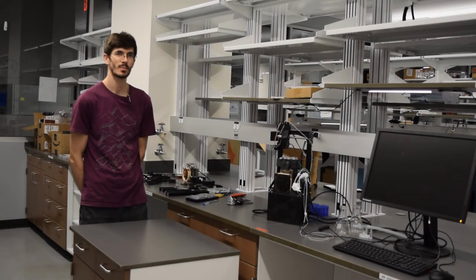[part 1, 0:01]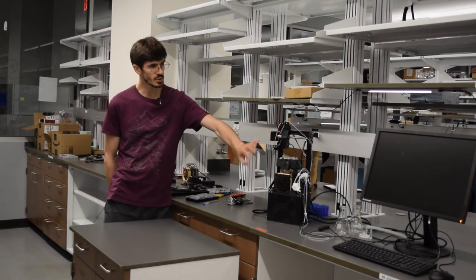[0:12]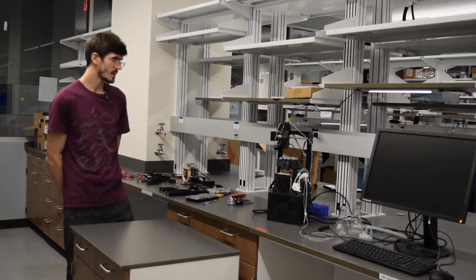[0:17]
I'm John with the Lynch Lab at Duke University, and in this segment we are going to be covering the first part of the assembly, the upper section, the Cartesian system, and the sample block here. So if you have not seen the first segment, the introduction and overview, I might recommend that you take a look at that before continuing. To get started here, we're going to look at the materials necessary to build it, and then we're going to put it together. I am excited. I hope you are excited.
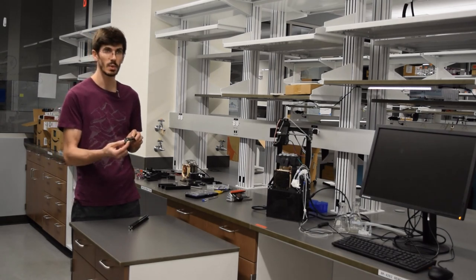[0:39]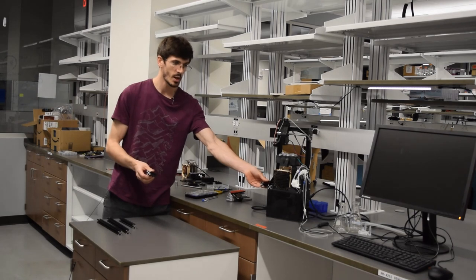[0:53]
So to start with the frame here, we have some 2020 aluminum extrusion. So that's 20 millimeter by 20 millimeter. It has the special V slot. And we have two pieces for the legs that are 290 millimeters. There's one piece for the X axis here that's 175 millimeters. And then two more for the feet down here that connect to the base that are 105 millimeters.
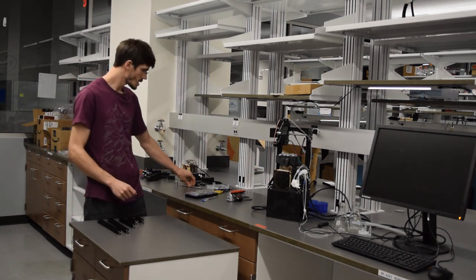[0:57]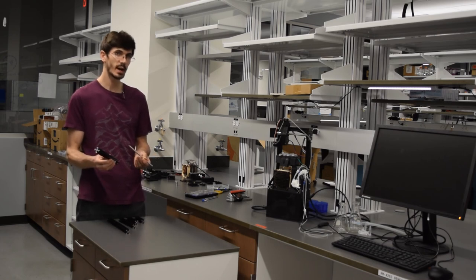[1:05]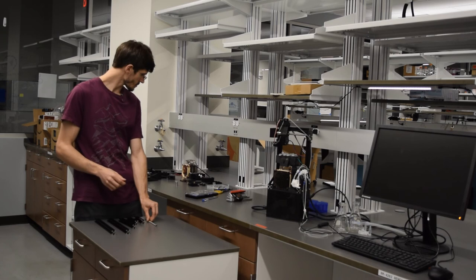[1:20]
Next, we have a lead screw that is 170 millimeters. So with the aluminum extrusion, you can cut this with a hacksaw and just shave off the sharp edges with a file. With the lead screw, it is stainless steel, so you are going to need a power saw with a metal cutting blade. This one was a little bit more difficult, so definitely be safe when you're doing that.
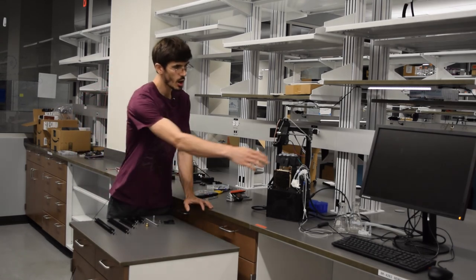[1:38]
To go along with that, we have a coupling nut to couple that lead screw to a stepper motor. There is a nut to connect the lead screw to the X gantry up here. We have the lead screw pillow and pillow bracket. So those are on this side over here that support one end of the lead screw away from the stepper motor.
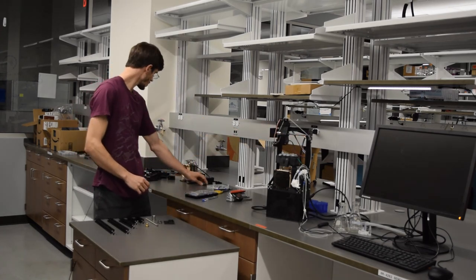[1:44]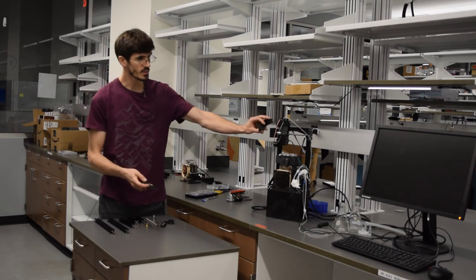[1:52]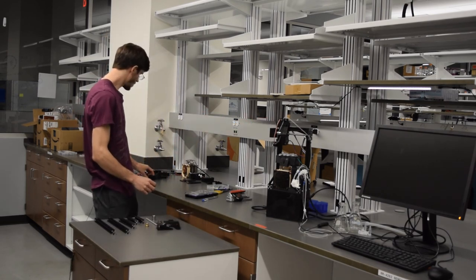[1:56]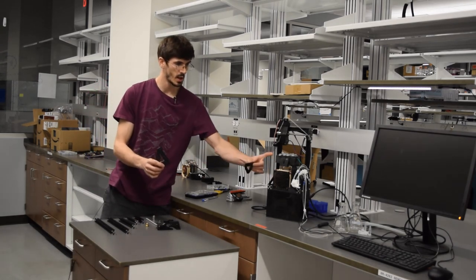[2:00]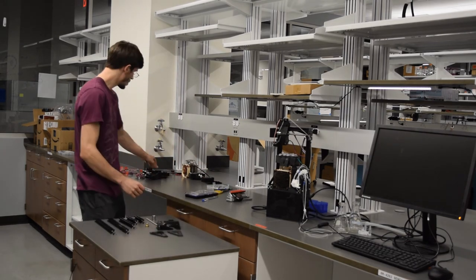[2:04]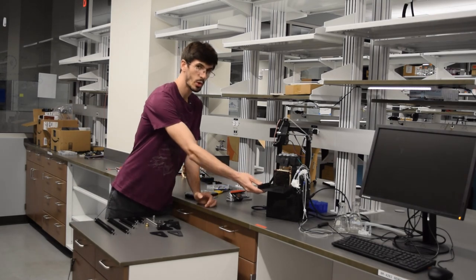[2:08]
Next, we have two wheels for the X gantry. We have the upper brackets up here. We have the lower brackets that are going to connect the legs to the base, to the feet. We have the radiator bracket here that's going to go at the base to hold the radiator and the base together.
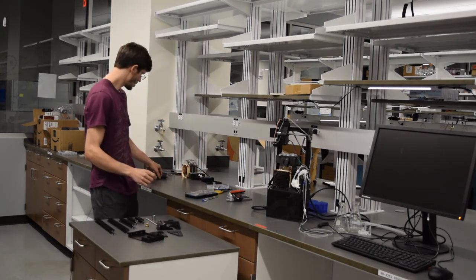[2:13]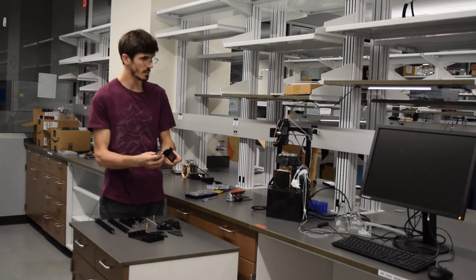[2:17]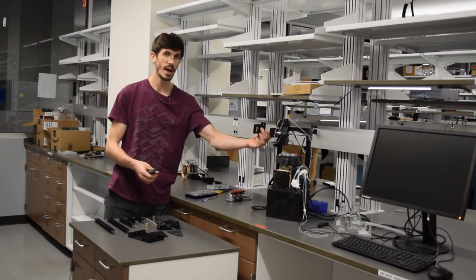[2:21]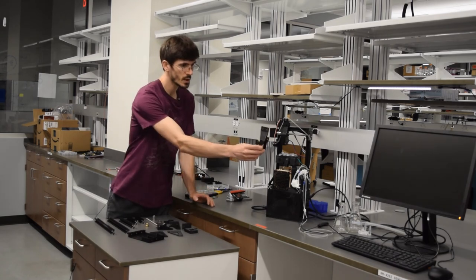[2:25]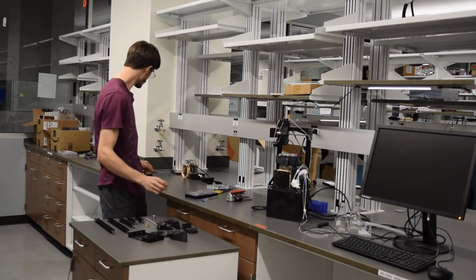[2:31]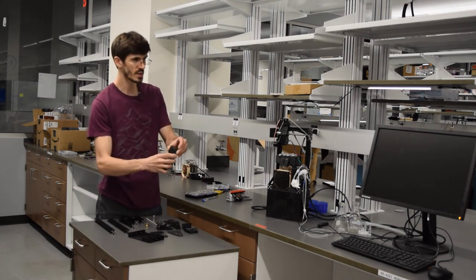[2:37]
We have two stepper motor brackets. So one stepper motor bracket is going to go on the side here for the X-axis stepper motor. And the second one is the X gantry that's going to move along the X-axis and hold the Y-axis stepper motor. The second part of the X gantry goes along with this. Those are going to mount together, and that is going to mount right to the X-axis.
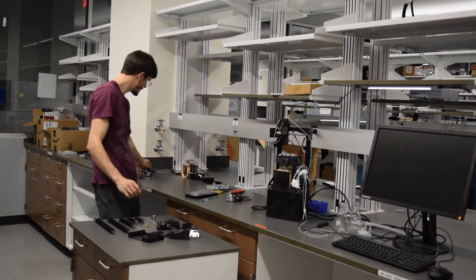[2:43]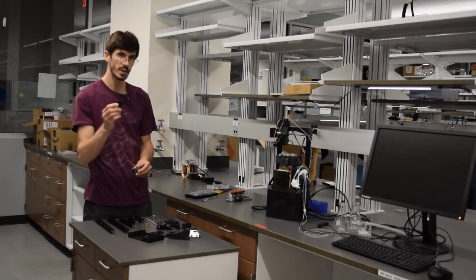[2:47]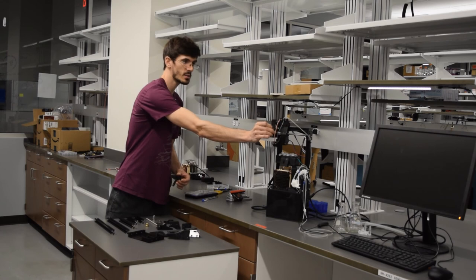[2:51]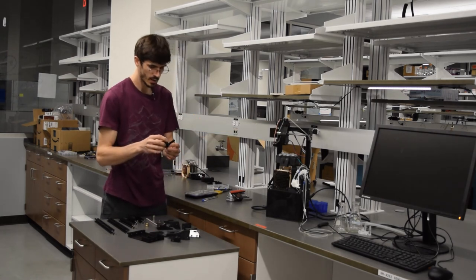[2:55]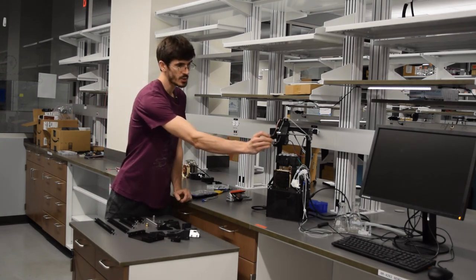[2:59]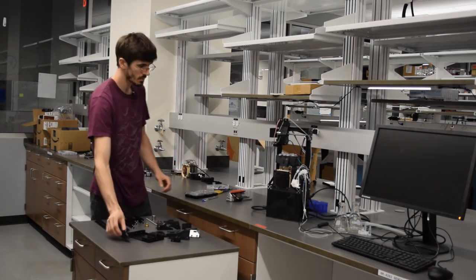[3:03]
Next, we have two switch brackets. So the X switch bracket will mount right on the left side here with the X end stop switch. And the Y end stop switch bracket will mount right to the X gantry here with another end stop switch for the needle.
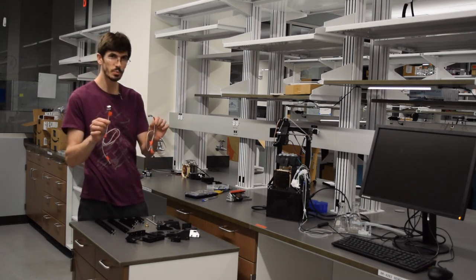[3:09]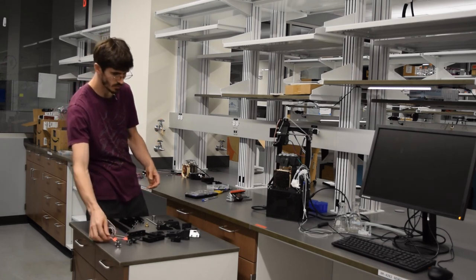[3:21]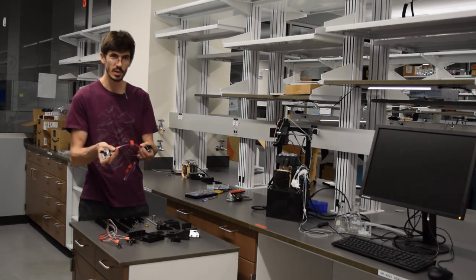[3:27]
For electronics, we've got two of the end stop switches. I've got the wires plugged right in, and I have labeled both sides of the wires Y switch and X switch to keep them separate. That'll help when we're assembling things later and plugging everything into the base. I've got two stepper motors here, also wires plugged in and labeled on both sides, Y step and X step. The Y step motor is going to have this needle holder attached to it that just plugs right on.
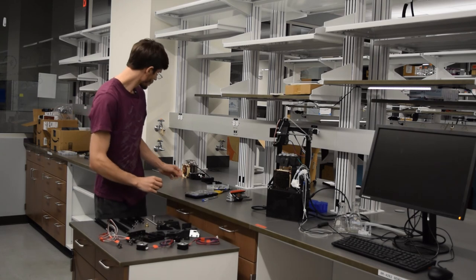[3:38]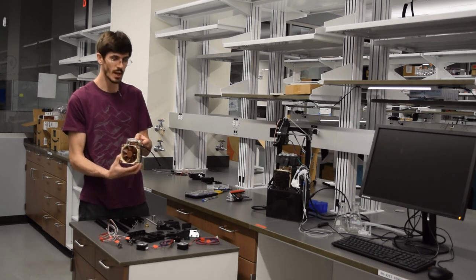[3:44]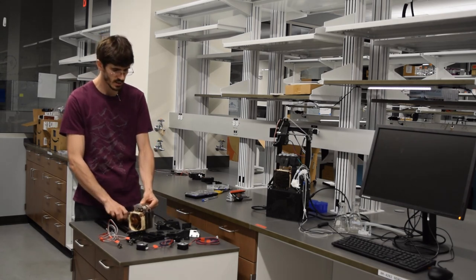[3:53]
Next, for the sample block, we have our Noctua U9S radiator. The fan and radiator come together. This is a 92 millimeter fan, and it's going to fit right in our radiator bracket there.
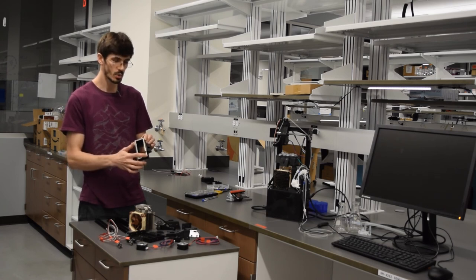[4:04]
The sample block box here is, when you 3D print it, going to be an open, hollow framed box, and I have already gone ahead and used some spray foam insulation to spray that right in there. Just a note on that, when you spray the spray foam in, you want to only fill the walls about 50% because it is going to expand. If you use too much, you could crack the inner wall. And it also is very sticky and makes a big mess. So just be safe with that.
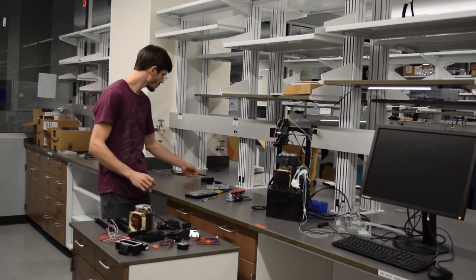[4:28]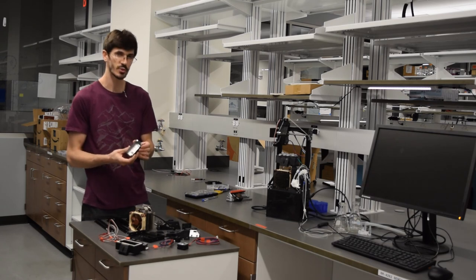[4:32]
Next, we have our aluminum box. So this is 38.5 millimeters by 92.5 millimeters, and it's going to fit right in the hollow-walled sample block box there.
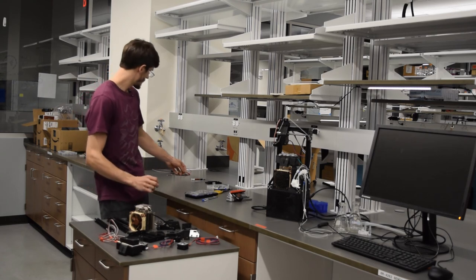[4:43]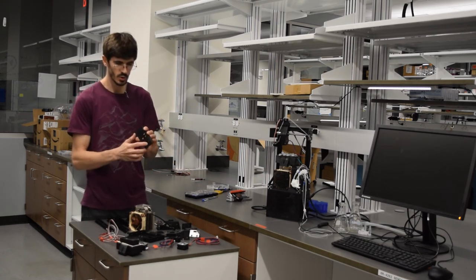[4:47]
We have the lid of our sample block. This has holes for 10 different tubes, and it's going to go right on top.
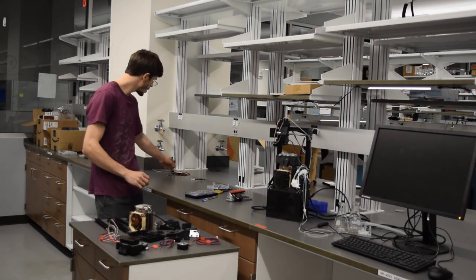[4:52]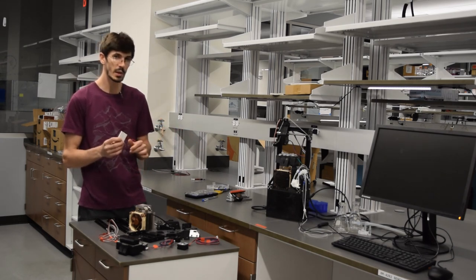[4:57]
We have the cooling unit, the Peltier. This is a thermoelectric cooler unit, and the basics of this: one side, the side with the lettering, is the cold side, and the other side's going to get hot. When you run a current through it, one side gets hot, one side gets cold, and the more we can keep that temperature differential close to zero, the more cooling we can get on the cold side. So we're going to put that right on top of the radiator and then try to suck the heat away from it, cool it, and that's going to keep the cold side cooling.
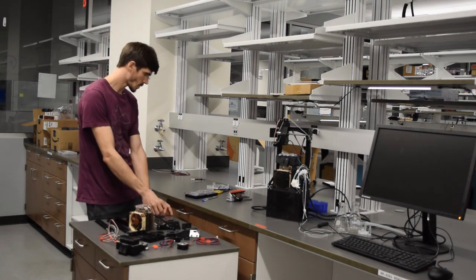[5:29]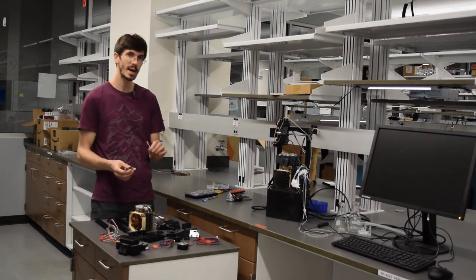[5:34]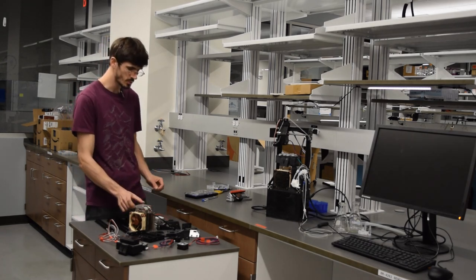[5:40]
To go along with that, we have some thermal paste and a spatula to spread that around on the Peltier and the radiator. That comes with the radiator, so you don't have to buy that separate. We've got a couple extra wires here that, once we put this together, we are going to extend the wires of our Peltier.
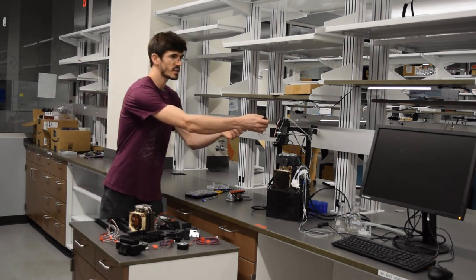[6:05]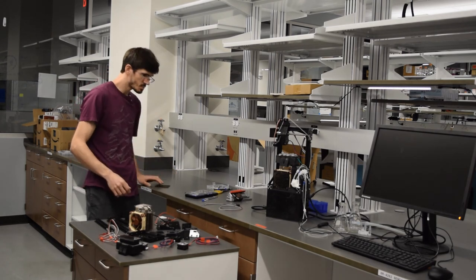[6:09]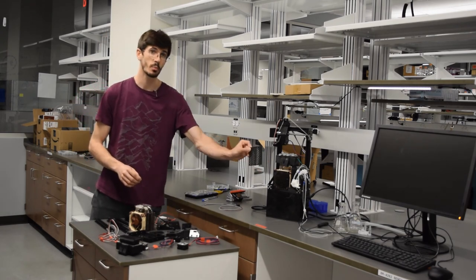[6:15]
We have a fluid sensor here, one of our two. This is an OPB350 fluid sensor. They're pretty cheap. That's going to go right up on the X gantry up here when we're all finished. And then last but not least, we have a fan cover that goes right in front just to keep you from putting your fingers in that fan.
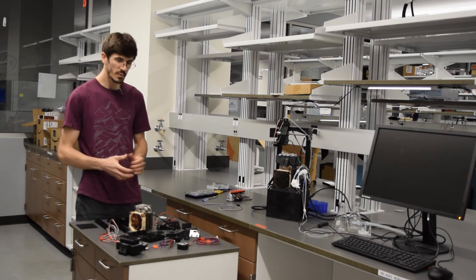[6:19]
All of these pieces are 3D printed. I have already removed the support material. If there's an overhanging edge, it prints a low density material underneath so that it has a surface to print on top of. You then do need to remove that material, and just a note on that, when you're removing it, be careful. There's sharp edges. You need to break it away, so be careful.
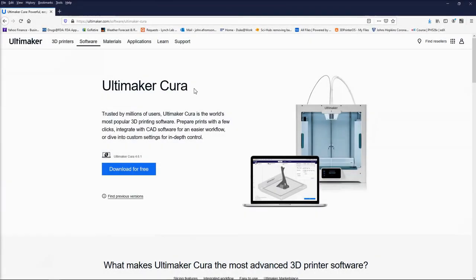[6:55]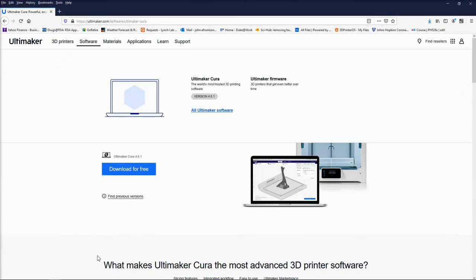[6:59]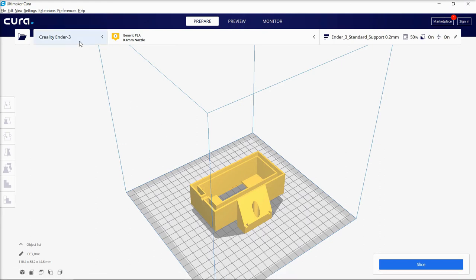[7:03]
Next, just a couple notes on 3D printing if you are new to that. We're going to be using Ultimaker Cura as a slicing software, and you can download that for free from ultimaker.com. Just Google that. Once you're in Cura, you're going to set it up with your printer. I use both a Creality Ender 3 Pro and an Ultimaker 3. The Ultimaker 3 is a little bit more expensive, but it is really nice with the soluble support. You can print much better detail if you have the money for that.
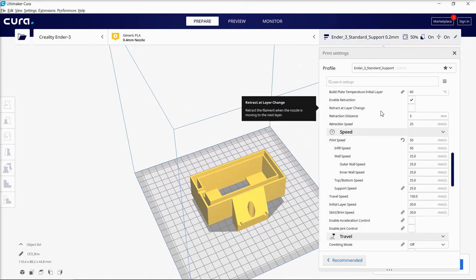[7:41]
It's about $3,500 to $4,000 plus materials. The Ender 3 goes for about $240 on Amazon. It's pretty cheap, maybe a little bit more, $240 to $280, but I've been getting some pretty good results with that. So once you have your STL file loaded, which I have provided, you're going to need your slice settings here. I just wanted to go through those quickly.
The big ones: I use a 0.2 millimeter layer height. Everything else should be set up pretty standard for you. The infill density is important. You can change that. 20% is base standard, so if it's just a test part, you can use 20% infill. I print most of my actual functional parts at 50%. It's strong enough. And if you want something really strong, use 100% infill density.
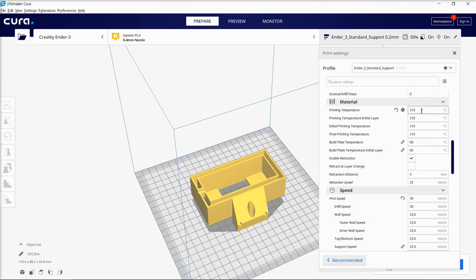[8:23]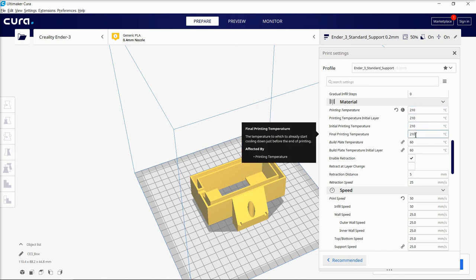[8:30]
Printing temperature is going to be specific to your material. PLA prints between 200 and 230. A couple of them, I do use 200. With the one I'm using currently, I slice at 210, and that makes it print a little bit better and adhere to the bed a little bit better. For the build plate temperature, I generally use 60, which makes it stick really well.
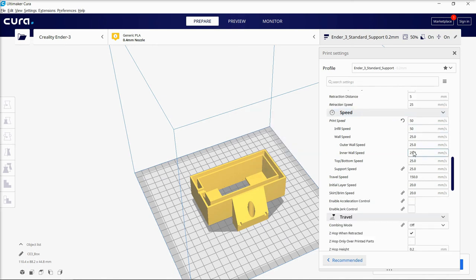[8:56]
If you can't get your prints off the bed, you can take a little water, put that right on the glass print bed, and use your finger to spread it around the edges, and the water will kind of suck the printed part off the plate.
Then print speed: I generally print at 50 millimeters per second with the Ender 3. For the Ultimaker, I print at 70 millimeters per second. I like to have high resolution and good accuracy, which is why I use a low print speed here. I have printed as high as 120 millimeters a second on the Ender 3, and you do get decent parts. Sometimes the corners don't come out perfectly, but you can up this a little bit if you want to.
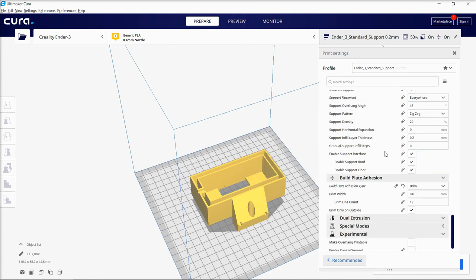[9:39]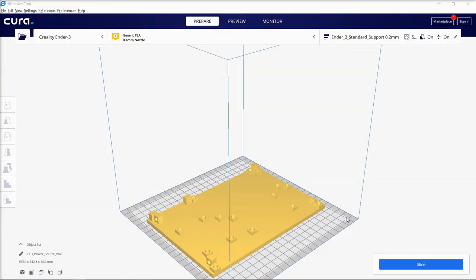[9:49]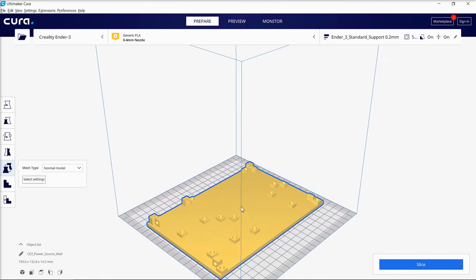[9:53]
Then for support, I do use support everywhere with an overhang angle of 47. These should be pretty standard in here, and I do print with a brim just to help that plate adherence, but you don't necessarily need that.
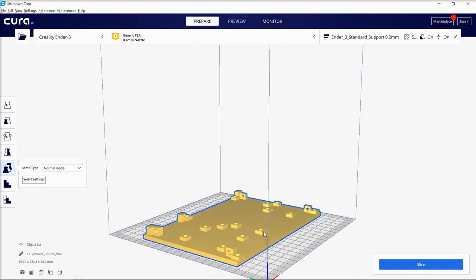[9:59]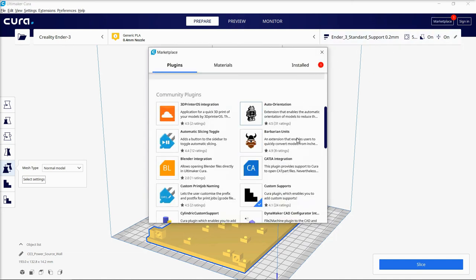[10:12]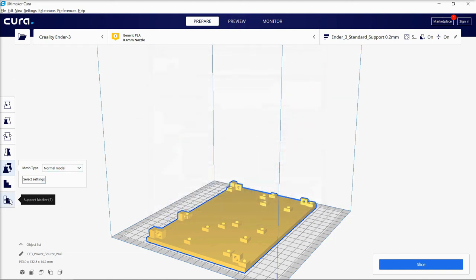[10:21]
The other thing I just wanted to show you in here is, for some of the pieces of our circuit housing, the box below the auto sampler, we're going to be putting heat set inserts in these locations where there's holes. And so for this, I'm going to slice this with a couple different densities. The way to do that, we're going to go to the marketplace here and go to custom supports. You want to install this custom supports package.
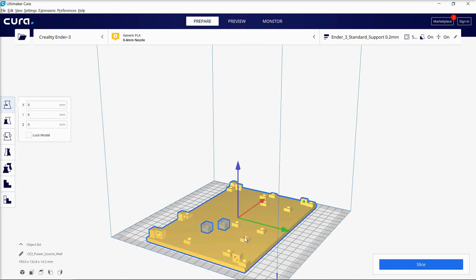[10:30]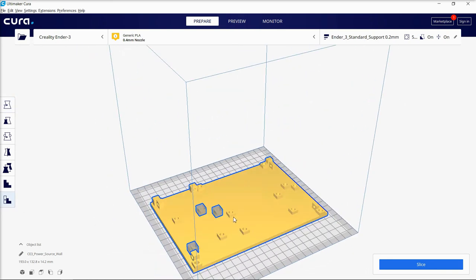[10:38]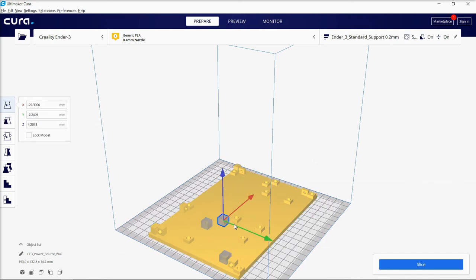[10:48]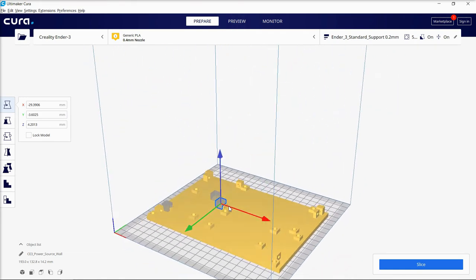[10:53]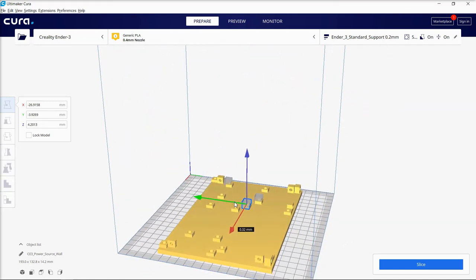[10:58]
And then once you have that, you're going to come over to support blocker, click that, and you can click on the model here to insert some of these blocks. Once you have those on there, you do want one for each location, but I'll just show you a few here. If you want to, you can go to scale and resize these blocks. The block we're going to move right over the inset location, like this. And once that is covering the whole inset, again, you're going to do this for each location.
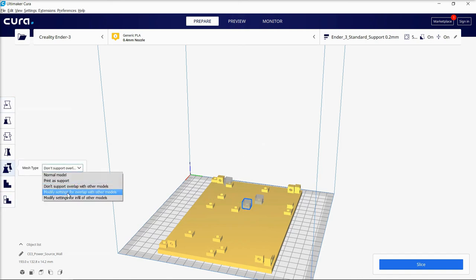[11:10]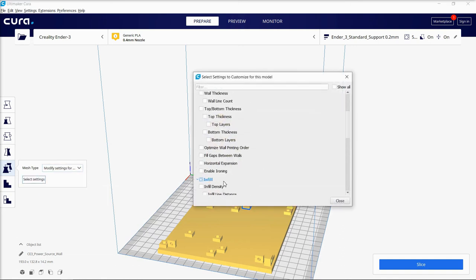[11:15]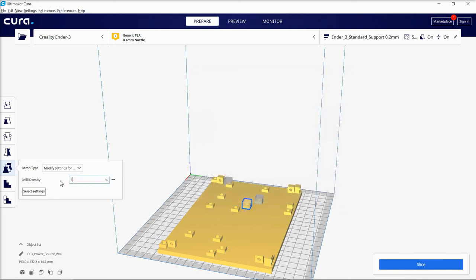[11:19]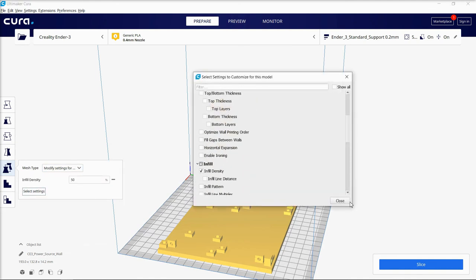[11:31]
But once that is covering, you're going to go to per model settings here, and then modify settings for overlap with other models, select settings, and when you come down to infill density, it will give you an option to choose the infill density just for the section that that block is overlapping your model. And again, you're going to do that for each block individually. Infill density 100.
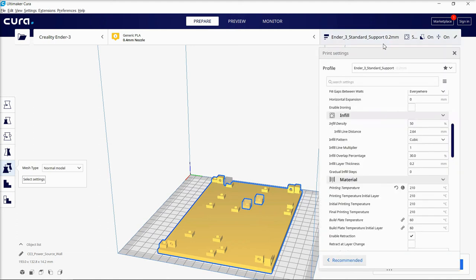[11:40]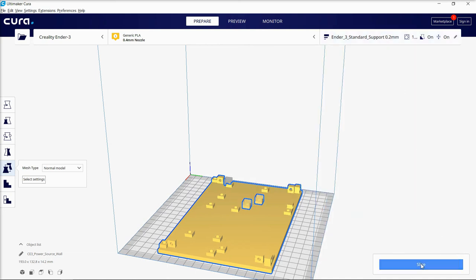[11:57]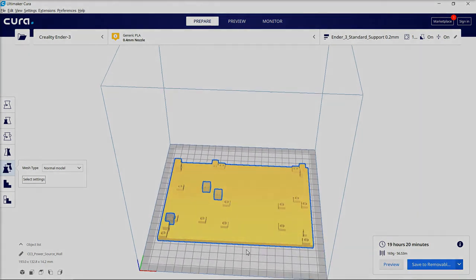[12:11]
So if you don't want to deal with that, you can just slice the whole thing in 100%. I think this one takes slicing at 50% here with 0.2 millimeter layer height. It's about 14 hours. If you change that infill density to 100%, it's going to take you just over 19 hours. So if you've got that extra five hours you don't mind spending printing this part, then don't worry about these slice settings, but they will save you a little time when you're printing.
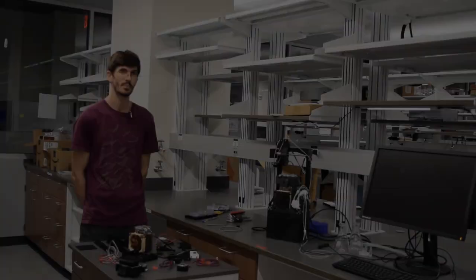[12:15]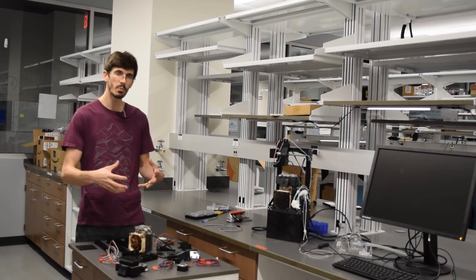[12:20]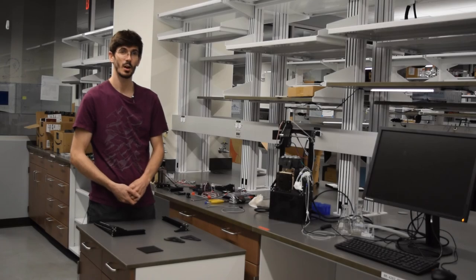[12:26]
Awesome. So we're going to get started putting this together. I'm going to assemble some pieces, and then I will walk you through how I put those together. All right, so I've put some stuff together here. Let me walk you through what I have done.
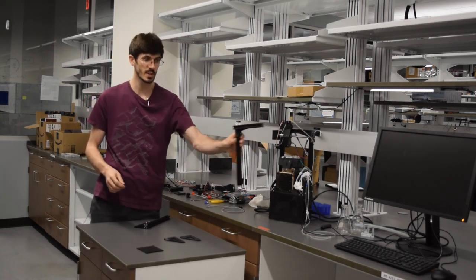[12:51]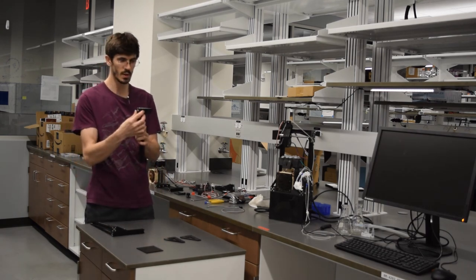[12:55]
So we've got our two legs, the 290 millimeter aluminum extrusion pieces. I've attached our upper brackets. These use 8 millimeter M5 screws with the V-slot nuts. There's going to be five on the inside of this one that's going to go on the left side and hold the X-axis stepper bracket. And then on this one, there's four on the inside. Notice on the one with the X stepper bracket, there's two open holes on the back that we're going to attach that bracket to.
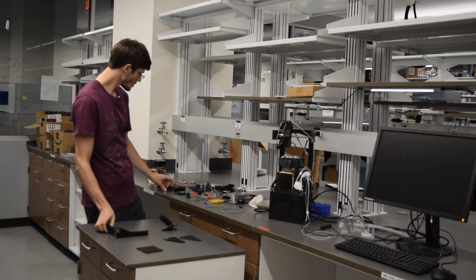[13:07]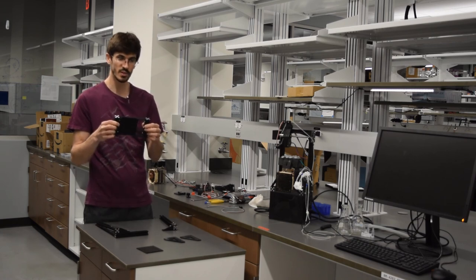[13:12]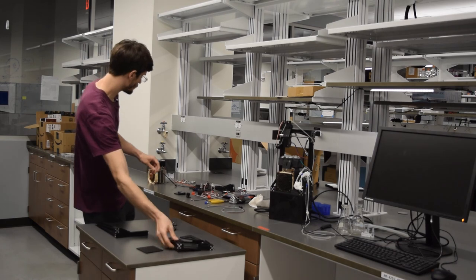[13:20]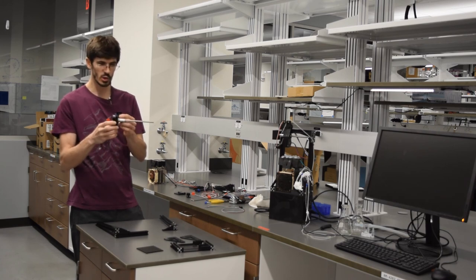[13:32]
The radiator bracket, I've used 6 8 millimeter M5 screws and V-slot nuts to attach the feet sections to that radiator bracket. We're going to come back for that one. The X-axis stepper bracket, I've got our lead screw attached to the coupling nut, attached to the X-axis stepper motor. Now with the bracket, if you're looking at it this way, so the motor is in front and the attachment bracket piece is in the back, the wires are going to come out the back towards me.
With the lead screw, it does have one sharp end where I cut it, so I've hid that in the coupling nut. And just a comment on screws here, there's 4 6 millimeter pan head screws. Pan head screws are kind of important here because they do need to sit below the surface of this bracket so that they can hide in there. So 6 millimeter pan head screws for that one.
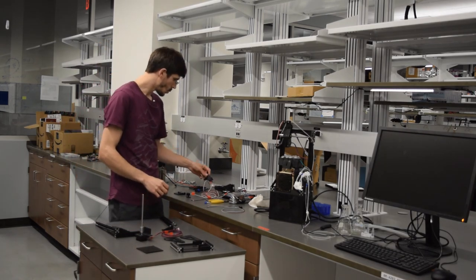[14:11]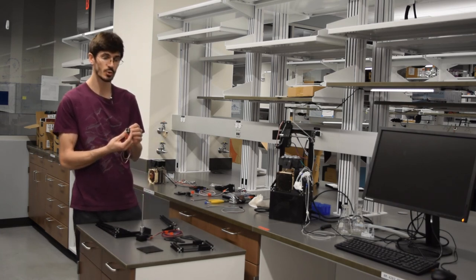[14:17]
With the Y-axis switch here, I've used 2 M3 20 millimeter screws with 2 M3 nuts to attach the Y switch to that Y switch bracket. Now the orientation of that, if you're looking at it this way, the circuit board goes towards the screw heads and the wider section of the end stop switch is going to be on the outside and the red actual bumper switch is on the inside closer to the bracket.
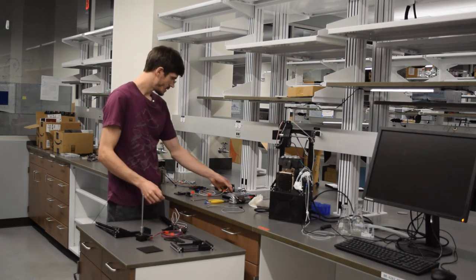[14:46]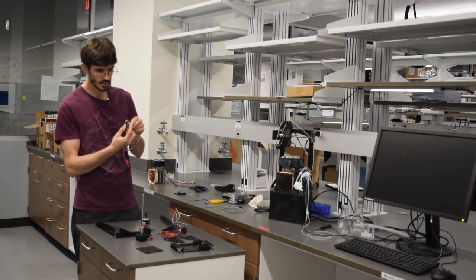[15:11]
The Y stepper motor I still have separate. The X switch bracket I have also attached to the Y switch. With this one, again, the orientation, if you're looking at it this way, so on your left is the vertical piece, the screws go on the inside, and the circuit board on the top. The wider section of the bumper is on the outside, and the red section is on the inside here.
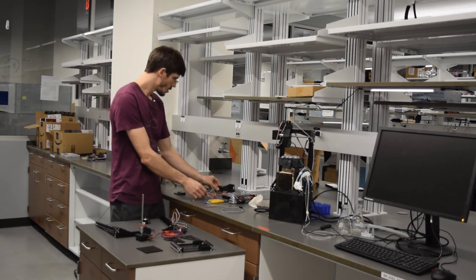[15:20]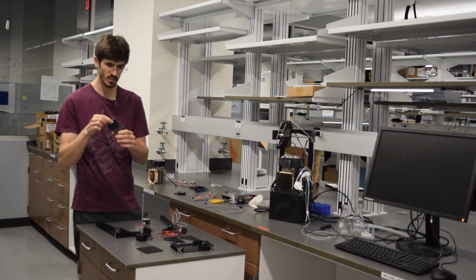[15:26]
For the X gantry, this one's a little bit more complicated. I've connected together the two pieces of that, the upper section and the lower section. I've used two M5 40 millimeter screws. You could get away with 35, but 30 is actually too short. So I used M5 40 millimeter screws. These are socket cap head screws. There's M5 nuts on the back, the two 20 millimeter wheels, and these are spaced with 7 millimeter printed spacers. I forgot to mention that up front. So again, there's M5 screws, the wheels, the spacers, connecting those pieces together.
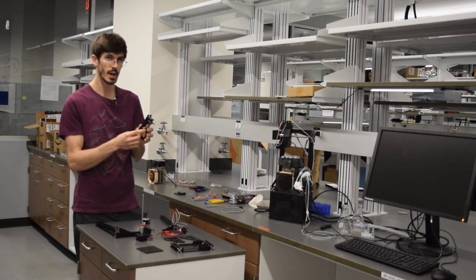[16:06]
For the lead screw nut here, I've used three 16 millimeter M3 screws along with three M3 nuts. And there's a fourth hole, you don't really need it, but when you are putting the nut into the socket, it inserts from this direction so that the circular section is on the inside here. The pillow, I have just put in the pillow bracket. And again, if you're looking at it this way, so that the extra plastic here is on the top, I only used the bottom screw hole. So there is a 12 millimeter M5 screw with the M5 nut on the bottom there.
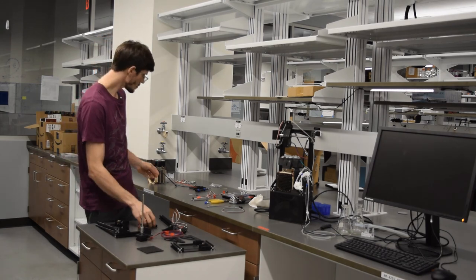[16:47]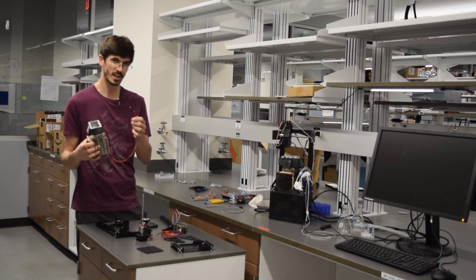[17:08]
For the sample block, I've attached the radiator and fan to the Peltier, to the box, and the aluminum block is in there. I extended these wires and put some heat shrink tubing over the connection points so that we don't short circuit anything. I've tinned up the ends. Just a couple comments on this.
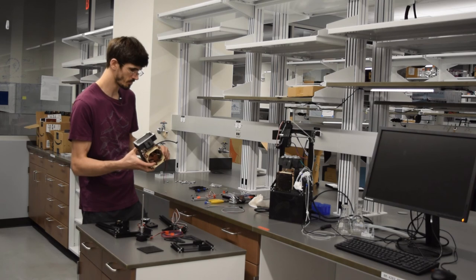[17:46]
So the Peltier we're using is a Peltier thermoelectric cooler 12706. That 12706 is going to be important because the 6 refers to 6 amps that it's using. I initially started with a 12710 using 10 amps, and it basically drew twice the current and twice the power consumption. It heated up twice as much. It cooled down the sample block twice as fast, but in general, we decided you really don't need it. It's going to be too much power consumption, so you really do want to use that 12706.
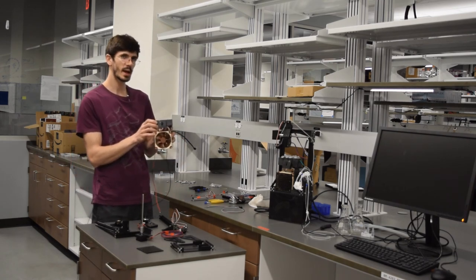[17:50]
For the thermal paste, the way I applied that is I applied it to the bottom side of the Peltier first and then squished that around on the surface of the radiator. Then I applied some thermal paste to the top. I used the spatula to spread it out nice and thin. You only need a tiny little bit just to cover the surface imperfections of the Peltier. Then I put the box, the insulated box, on top of that.
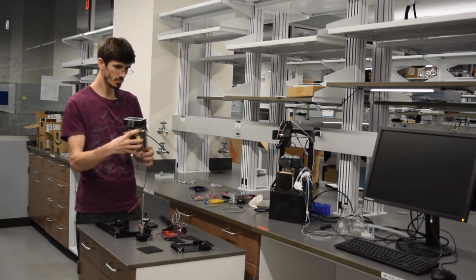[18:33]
I used two 12 millimeter M5 screws with M5 nuts to connect through these holes. There's initially some pins in there with screws that I just popped out. So you use those two screws to connect it down. Then the aluminum block goes right on top and just push that right down. Again, one more time, with the Peltier, the numbered side, the lettered and numbered side, needs to go up because that is the cold side when you run current through it the proper direction. So next, I'm going to put a few more of these pieces together, and then we'll regroup and walk through that.
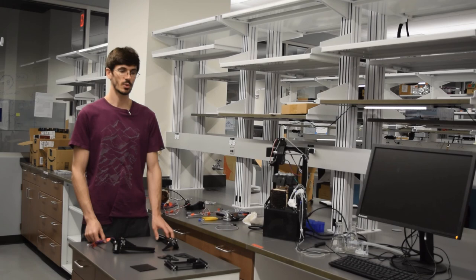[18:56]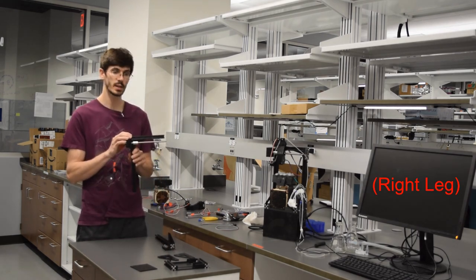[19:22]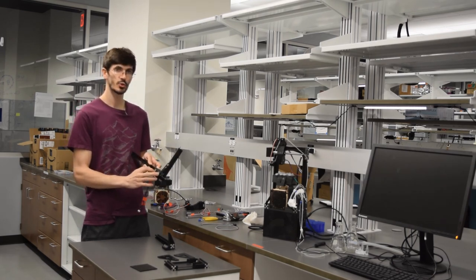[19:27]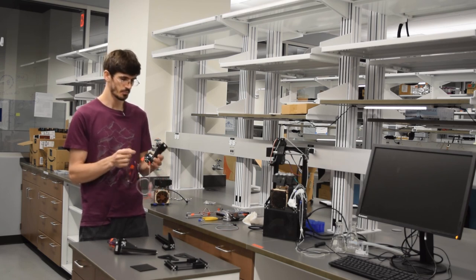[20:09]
With the X gantry, I've attached the Y stepper motor and the Y switch bracket here. To hold those together, if you're looking at it from the front, the Y switch will stick out this way, and the wiring will stick out towards you this way. There are three M3 8mm screws that go through all three of these. They go through the Y switch bracket, through the gantry, and into the Y stepper motor. There's also one 6mm pan head screw there.
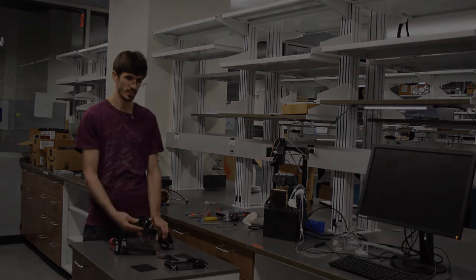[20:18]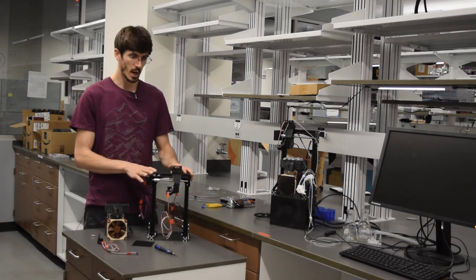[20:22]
For the last step, we're going to put these three sections together, and then we're going to attach it to the base. For that final step, I assembled the upper section by slotting the X gantry onto the X axis. To do that, you're going to slide it right on the X axis. You're going to thread the lead screw into the nut that's on the back of the X gantry, and then you're going to slot the leg with the pillow bracket on the end. So it's going to fit the lead screw on there.
On the back, you are going to use, again, M5 8mm screws to attach those upper brackets to the back. If things don't quite fit just right immediately when you put it together, you can loosen things up a little bit, slide it around, level out those brackets, and then tighten it back up.
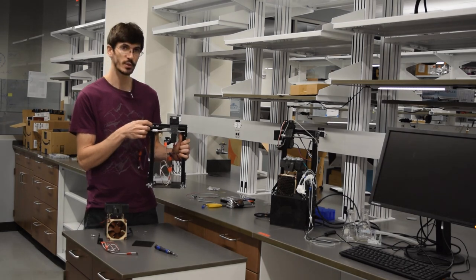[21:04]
Just a note on the front side here. I have added two extra V-slot nuts on the front of the X-axis. They're going to slide towards the end with the stepper motor, and that's where we're going to mount our X-switch bracket. But you do need to slot those on before you put on the pillow bracket so that you can get them in there.
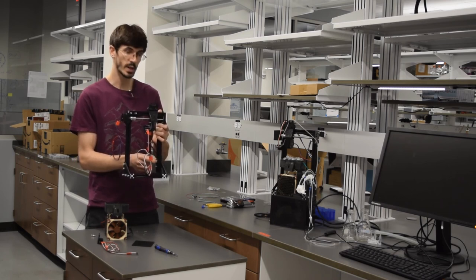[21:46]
On the bottom here, I've used the lower brackets, the YZ brackets, again with M5 8mm screws and the V-slot nuts to attach the radiator bracket and the base, the feet there, to the legs, both sides. Similar note as well on the inside surface of the leg with the pillow bracket. It's also going to need two V-slot nuts with the 8mm screws so that we can mount our pump housing there later. Again, you need to get those V-slot nuts in before you make the final connection with the base so that you can get them in.
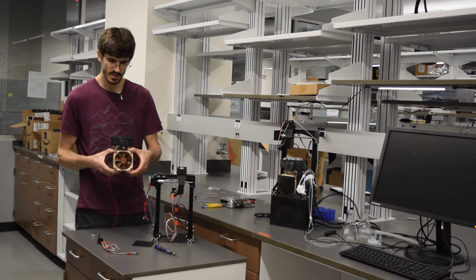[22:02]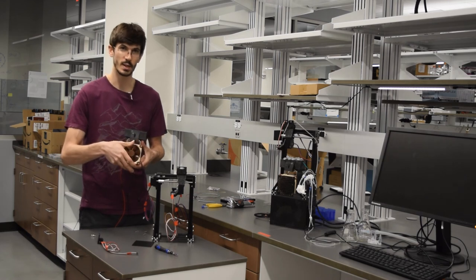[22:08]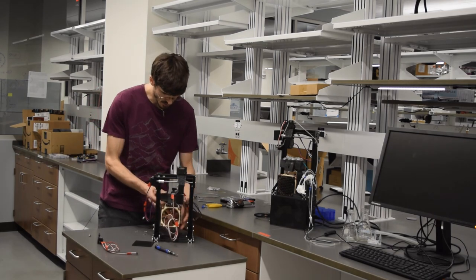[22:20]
So just a couple finishing touches with the sample block and the radiator here. I did take off the fan. You can do that by just popping these brackets off the side, and I just rotated it 90 degrees so that I could have the wire down in the bottom corner here. It initially starts up in this corner, but I like it down at the bottom so that it can thread along the side there. Put the lid right on top, and this is going to fit right into the radiator bracket.
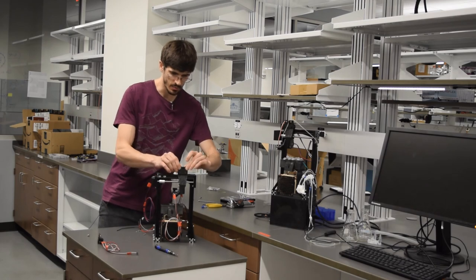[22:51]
It's a little bit tight. Once that is in there, the fan cover should slot right in front. There's a couple little notches right on the side at the bottom, and those can fit right in there. Perfect. The OPB350 fluid sensor, we're going to slot right in the top of the X gantry here, and then two 12mm M3 screws and M3 nuts to hold that in place.
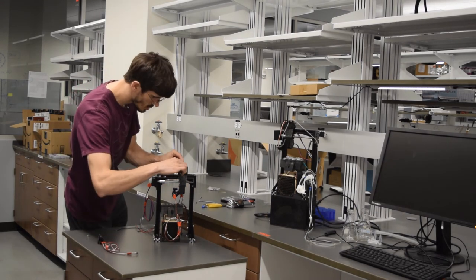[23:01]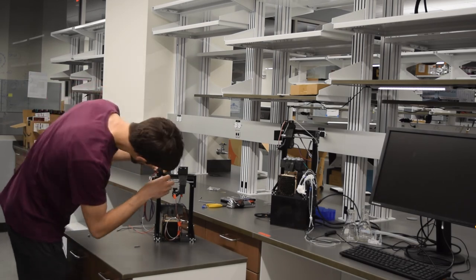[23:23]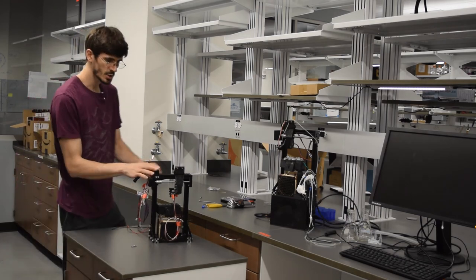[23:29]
And then lastly, the X switch bracket there, right in the front. Again, M5 8mm screws. And that switch bracket should go as close to the stepper motor as possible.
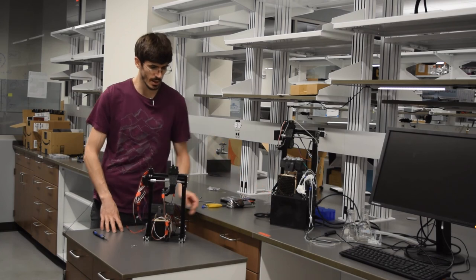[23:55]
So great, there you have it. We've got our sample block all set to go with the radiator, the Cartesian system. We're just going to put our blunt 18-gauge needle with the luer lock in that needle holder. It's basically good to go. In the next section, we're going to be covering the circuitry and the base housing down here.
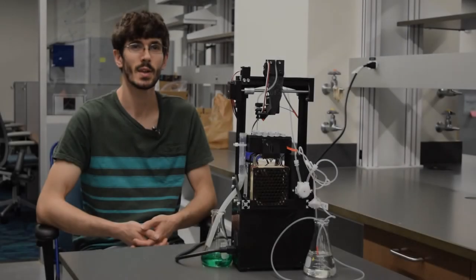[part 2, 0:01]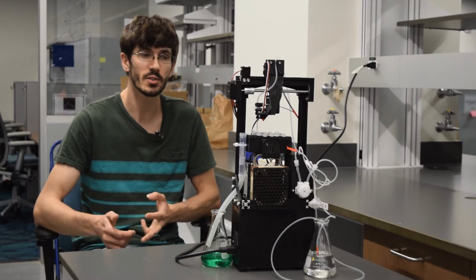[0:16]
I'm John with the Lynch Lab at Duke University, and in this segment, we're going to be covering the operation of the BioSamplr. We're going to cover the setup, the sampling process, as well as the cleanup. If you haven't seen the previous couple videos, the assembly part one, part two, and the video on software, maybe take a look at those before continuing. Let's take a look here.
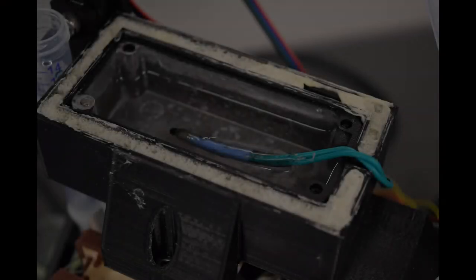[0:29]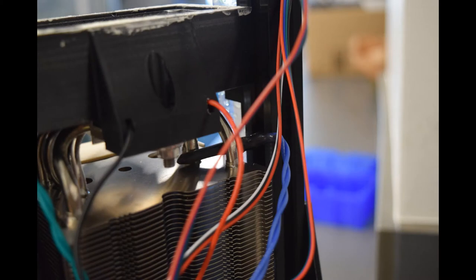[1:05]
To begin setting up for a sampling run, let's first put thermal probe number one into the sample block. For me here, thermal probe one has a green wire and it fits in the notch on the right side of the sample block when looking at the BioSamplr from the front. The aluminum box of the sample block should be half filled with water and/or ethanol. We've added some ethanol so the stagnant water won't grow anything. Make sure not to overfill the box, as sample tubes will be inserted into it and displace some of the volume. The thermal probe should be in the water, centered so that it will be between the two rows of sample tubes. Thermal probe 2, which is blue for me here, should rest on top of the radiator and can be either wedged between the radiator pipes or taped on the top.
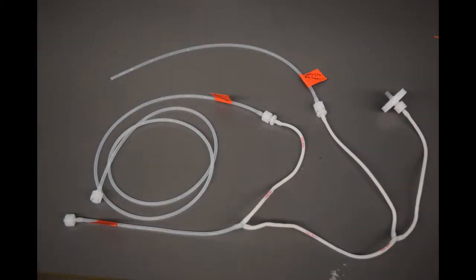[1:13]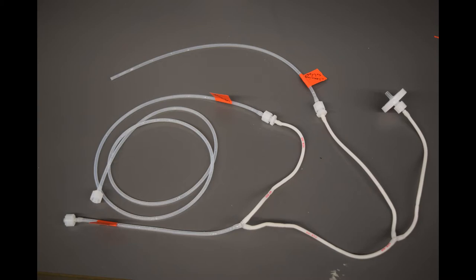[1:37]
Next, let's set up the sample tubing. As shown in the picture here, there are two sections of Y-pinch tubing connected together, with a branch of one Y connecting to the base of another. From left to right, we start with a small section, approximately 15 centimeters, of 1/8-inch outer diameter tubing with a male luer lock on one end and the other connected to the base of one Y pinch tube. The left branch of this first Y has a female luer lock barb which connects to a male luer lock and the tube to the bioreactor or source, which is approximately 100 centimeters long. The other end of this section has a male luer lock to attach to a sampling probe on the bioreactor. The right branch of this first Y attaches to the base of the second Y.
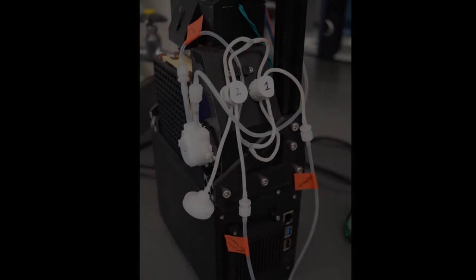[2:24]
The left branch of the second Y has a female luer lock barb which connects to another male luer lock barb with a section of tubing that extends to the cleaning solution. This section of tubing is approximately 30 centimeters long. The right branch of the second Y has another male luer lock barb with a 0.2 micron sterile filter connected. Next, we need to properly connect these fittings and insert the pinch tubing into the valves.
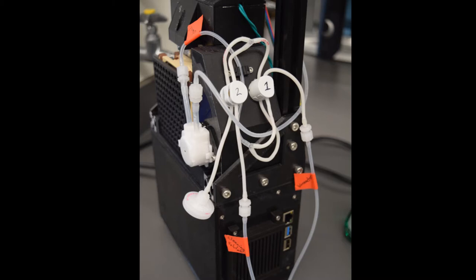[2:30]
The peristaltic pump should be fitted with two female 1/4-inch luer lock barbs. The pump section of the tubing is connected to the left inlet of the peristaltic pump. This tube is then inserted into the fluid sensor at the valves and then winds towards pinch valve number one, which is on the right side. The bioreactor or source branch goes in the front slot of valve number one, and the branch going to the other sections is inserted into the back slot of valve number one. For the other two branches, the one with the sterile filter should be inserted into the back slot of valve number two, and the cleaning solution branch into the front slot of valve number two.
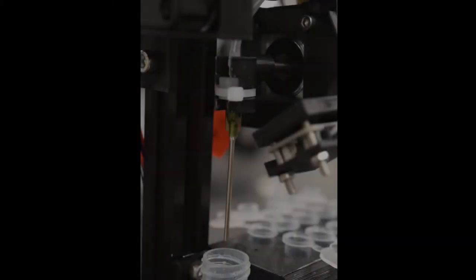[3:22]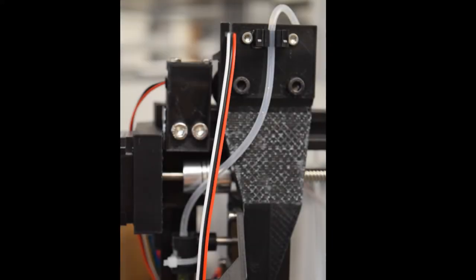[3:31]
From the right side of the peristaltic pump, another approximately 70 millimeter section of tubing is connected with a male luer lock barb, which then feeds around the back of the instrument to another male luer lock barb with a blunt 18 gauge needle. This luer lock and needle is inserted into the needle holder, and a zip tie is used to hold this in place in the needle holder. This tubing is also inserted into the fluid sensor on the gantry. All tubing except the tubing that's actually in the peristaltic pump is 1/8-inch outer diameter tubing.
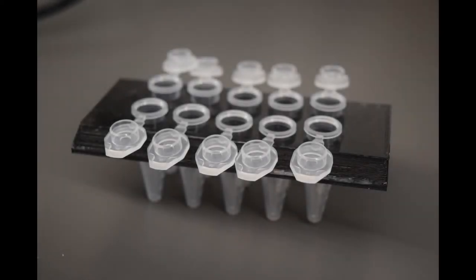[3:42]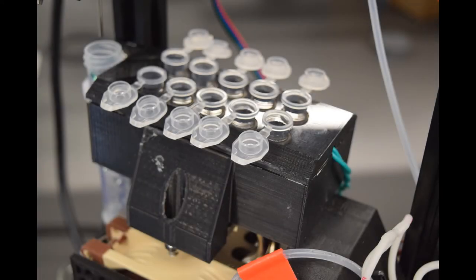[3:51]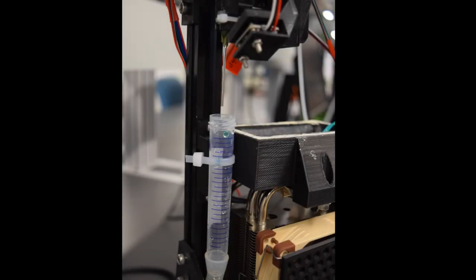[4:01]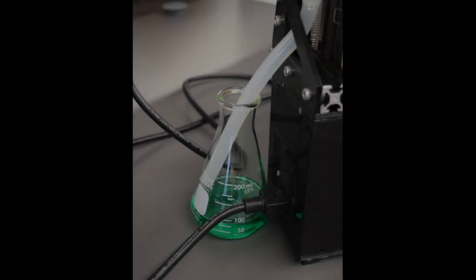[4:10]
Next, 10 microcentrifuge tubes are inserted into the sample block lid with their lids opening outwards away from the sample block. The lid is then placed on top of the sample block with the thermal probe between the two rows of sample tubes and the notch on the right side accommodating the thermal probe wires. If it's not already mounted, attach the waste tube to the waste bracket with a zip tie. The top of this should be at about the same level as the sample tube openings. Make sure to put a flask or bottle under the waste tube to collect the waste fluids.
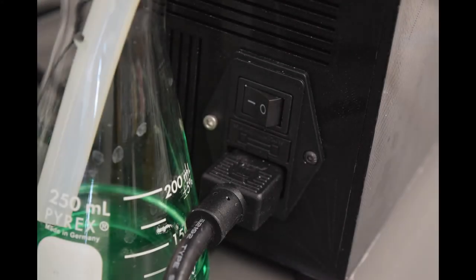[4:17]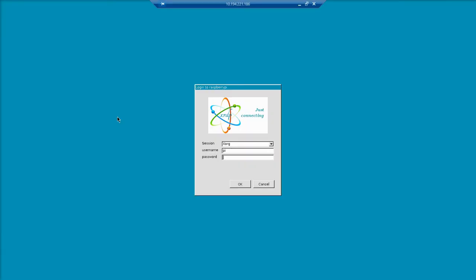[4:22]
Once everything's set up, plug the BioSamplr into a wall socket and switch it on. Open up your BioSamplr interface, whether you're using a remote program or if it's plugged into a screen.
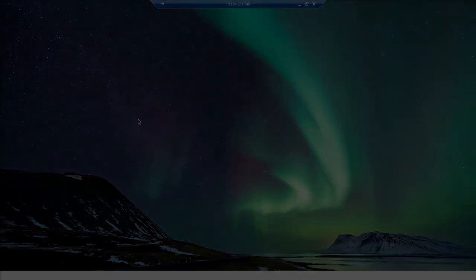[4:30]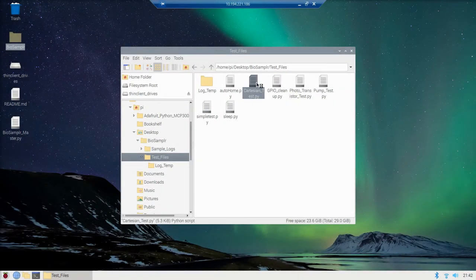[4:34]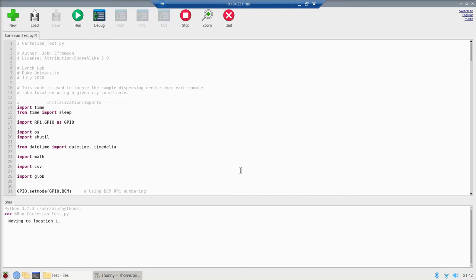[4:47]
First, open cartesiantest.py. Run the script by clicking Run at the top. The sample needle should be moved over each sample tube. If the needle looks like it's not over a tube, change the coordinates and try again until all locations are
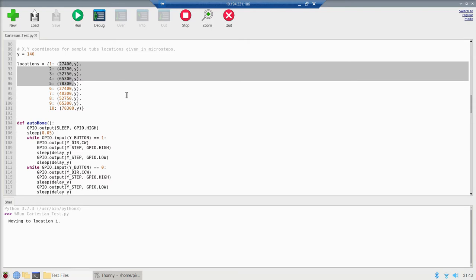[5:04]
defined properly. Remember, the Y coordinate is the same for all locations, which is the distance from the central vertical location. So if you change the Y coordinate here, it's going to affect all sample tubes. The x-coordinate is the distance along the x-axis from the home or waste tube location.
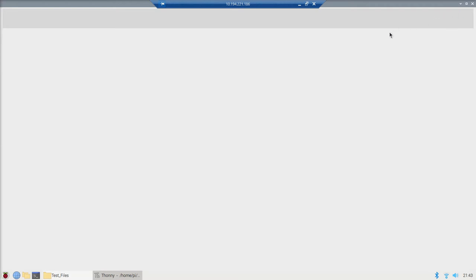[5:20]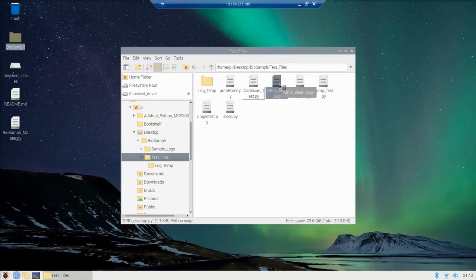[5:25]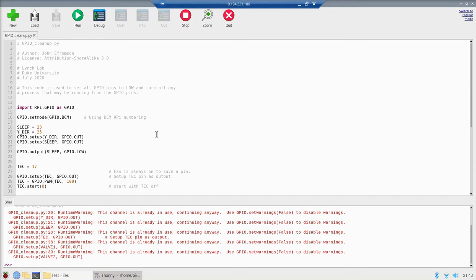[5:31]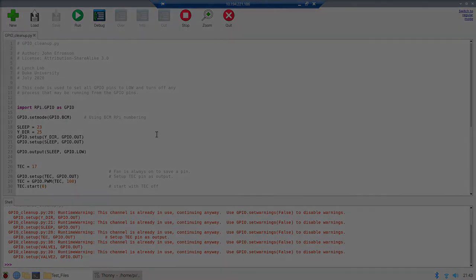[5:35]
Make sure you use Ctrl-C to exit from this. You may need to click down at the bottom here to use Ctrl-C. And if that doesn't work for you because it's busy moving, you can close out of that script, open up GPIO cleanup, and then on this script, hit stop, run this one, and that will turn everything off, making sure that your stepper motors are not energized.
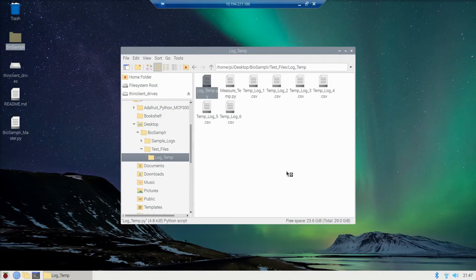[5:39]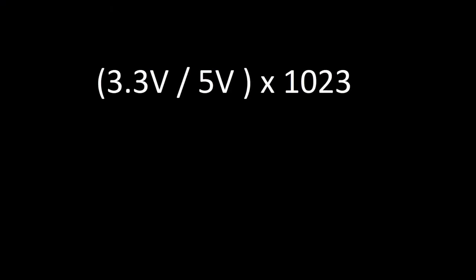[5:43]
Next, open logtemp.py. To calculate the max temp ADC value, divide the value you measured from your 3.3 volt reference by the 5 volt reference, multiplied by 1023.
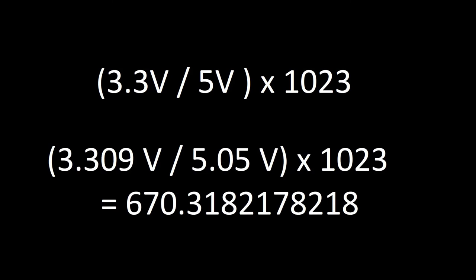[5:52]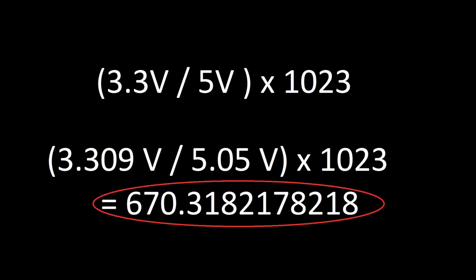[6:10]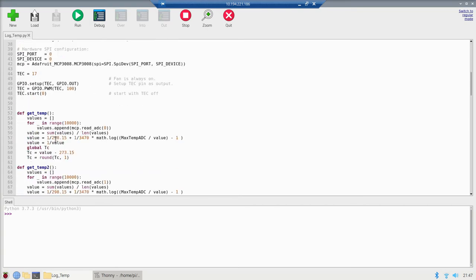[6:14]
For example, for this unit, we measured the 3.3 volt reference was 3.309 volts. 5 volt was 5.05 volts. So 3.309 divided by 5.05 multiplied by 1023 equals 670 with this long decimal after. Going back to logtemp.py, scroll down to the max temp ADC and change this value to the one that you just calculated.
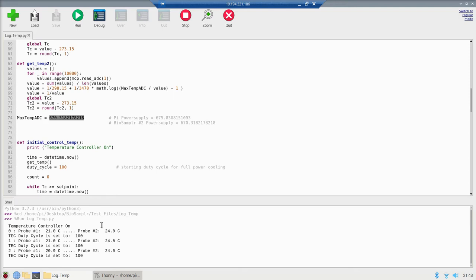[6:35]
When you start this script, you should see both probes outputting temperatures that make sense. Approximately room temperature to start, maybe slightly cooler for the one in the sample block. And probe 1 should decrease, and probe 2 should increase.
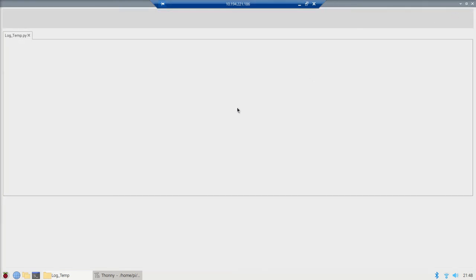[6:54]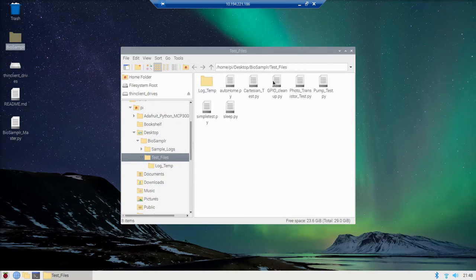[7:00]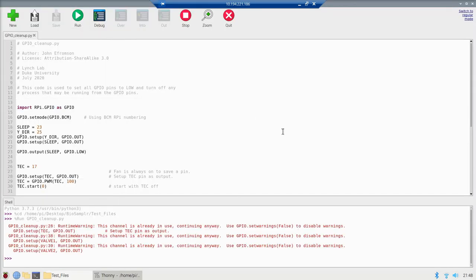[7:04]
Again, make sure you use Ctrl-C to exit from the script. And if it doesn't work because your memory is busy, you can press stop, close out of the script. Your Peltier cooling element is still cooling, so we want to go to the GPIO cleanup script and run this to turn everything off.
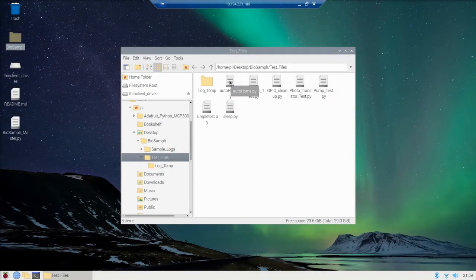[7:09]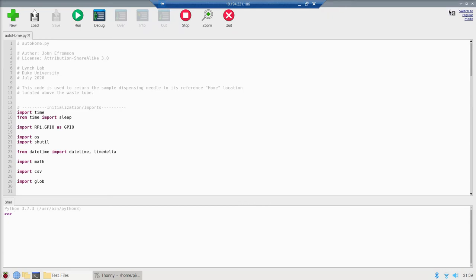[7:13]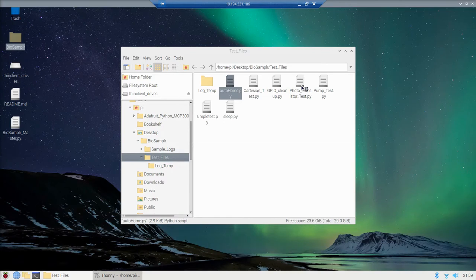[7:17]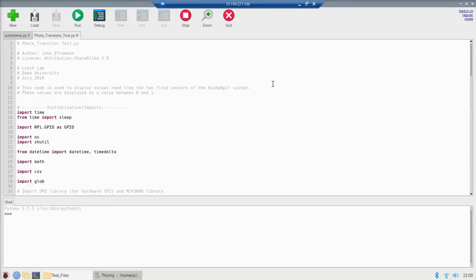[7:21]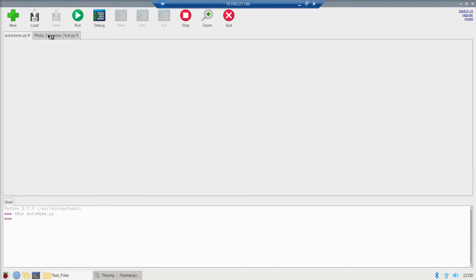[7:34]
Next, we want to open up AutoHome as well as the photo transistor test. First, we want to run AutoHome, just to make sure that our sample needle is located over the waste. Next, make sure that the source tube is not connected to anything so that only air will move through it as we're going to turn on our pump.
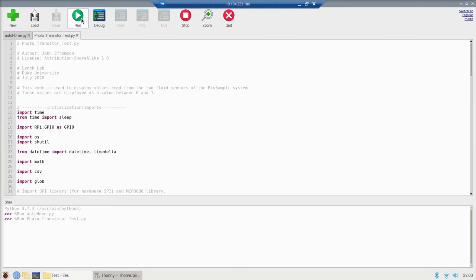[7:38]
Run phototransistortest.py and write down an approximate average value reported for each fluid sensor. So right now, fluid sensor 1, the valve sensor, is reading pretty consistent, 0.963, and the needle sensor 0.96, just over 0.964. Write down an approximate average value for each fluid sensor. This is the baseline reading for each sensor with empty tubing.
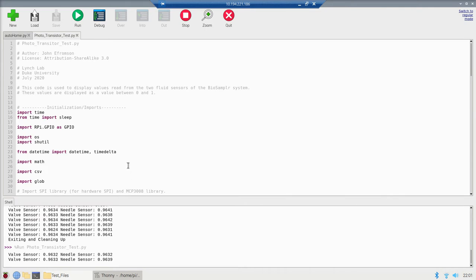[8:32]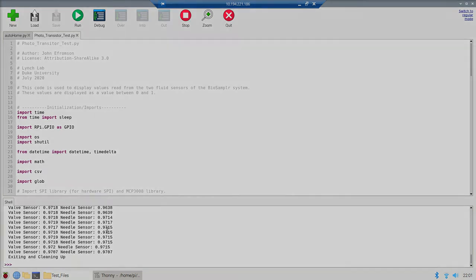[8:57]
Next, use Ctrl-C to stop the script and put your source into some water. Start the script again, and as the fluids pump through, you can start to see the change in the fluid sensors. So it's going to hit valve 1 first, it's going up to 0.97, over 0.97, and then soon it's going to hit needle sensor, which also goes above 0.97. Perfect. So again, use Ctrl-C to stop your script.
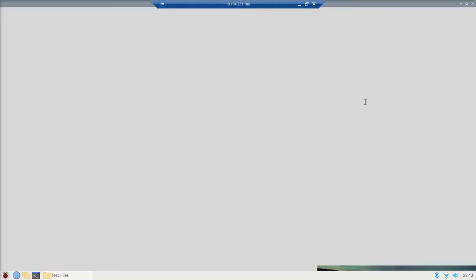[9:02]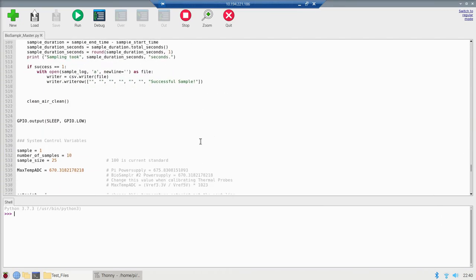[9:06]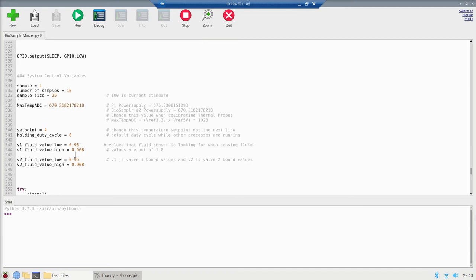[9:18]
So next, let's open up the BioSamplr_Master script here, and we are going to scroll down to the system variables section, and let's first change the max temp ADC value to the value that you just calculated and inserted into your log temp script. Once that's set, come down to your fluid value thresholds here. And these two values should straddle the baseline reading that you got with no fluid in your tubing. The high value should be just under the value that you got with water in your tubing.
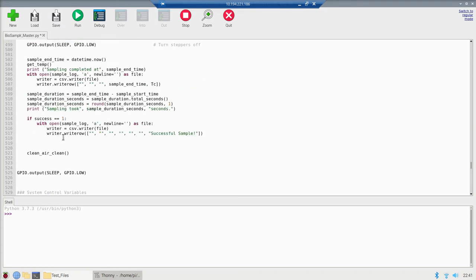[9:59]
So for instance, for mine, I had 0.97 when there was water in the tubing, so I chose 0.968 to be just below that 0.97, and similarly your low value should be approximately the same distance below your baseline. Also, just for this test, let's change our set point to 24 degrees Celsius.
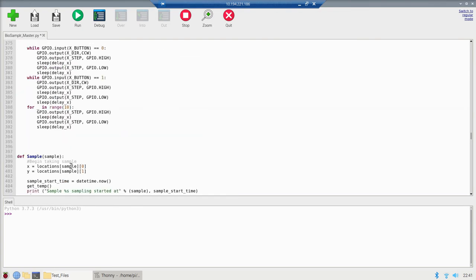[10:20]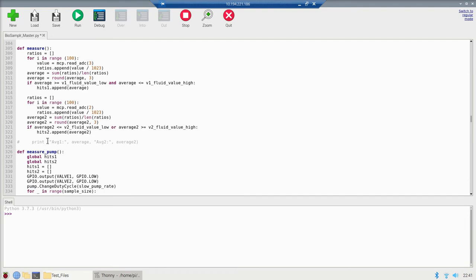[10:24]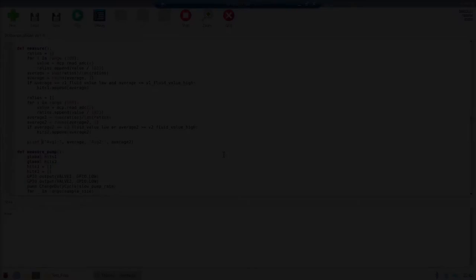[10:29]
Then scrolling up, line 521 here, we're going to comment this out. So if you hit Alt 3, that will comment that one out just to save us a little time here. Line 465, you're going to comment this one back in. So Alt 4 will comment that back in. And then one more here. Line 324 here, we're going to comment that back in as well. So Alt 4.
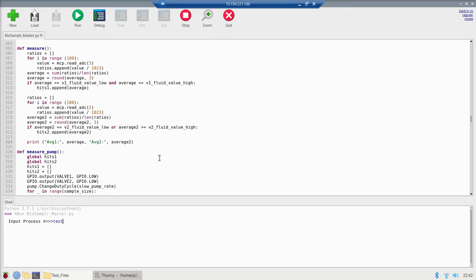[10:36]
So now when we run our script, it's going to first ask us to input a process number. I'm just going to put in test for now. The sample interval, I'm going to put in 0. And now I already have some log files named test, so it asks if I want to overwrite them. I'm putting in Y, enter to start up. It shouldn't ask you to do that, assuming you're putting in a unique process number.
Now normally it will cool the sample block down to the set point before taking the sample, but because we set our set point high, it should start right up. It initially is now clearing the sample tube to begin. It's then going to pull a purge sample into the tubing. It will then clear that purge sample to waste.
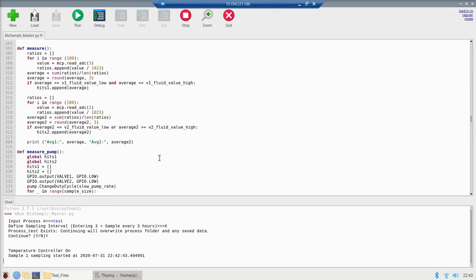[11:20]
Then for the actual sampling, it's going to pull a sample into the tube. It will use a short clear to move that sample up towards the needle. Then the sample dispensing needle will move to its sample location. At that time, the fluid sensor by the valves should not see fluid in the tubing, but there should be fluid in the tubing by the other fluid sensor up on the gantry.
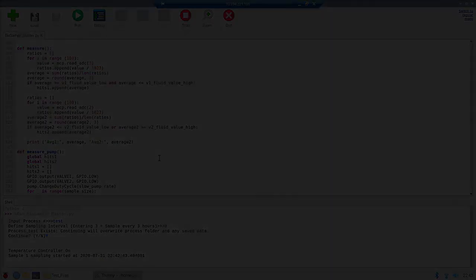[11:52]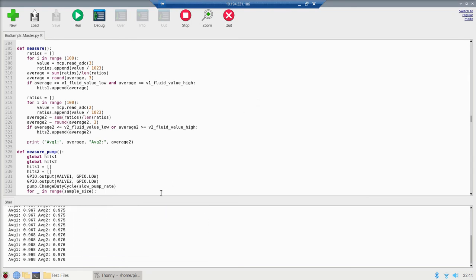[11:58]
Now once the needle moves to the sample location, it's going to dispense the sample and it's going to output these values. So I'm going to stop here and hit Control C to exit the script. And let's take a look here.
So the first sensor at the valves is outputting these values because it did not see fluid. So it is below that 0.97. It's also within the bounds that we set for it. The second fluid sensor is above that 0.97.
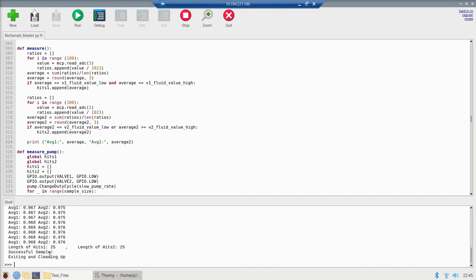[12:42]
And now the way this script is working, it is appending to hits one if sensor one values are within the range, and it's appending to hits two if they're outside of the range. So because it did not see fluid at sensor one, and it did see fluid at sensor two, it's now going to tell us it's a successful sample.
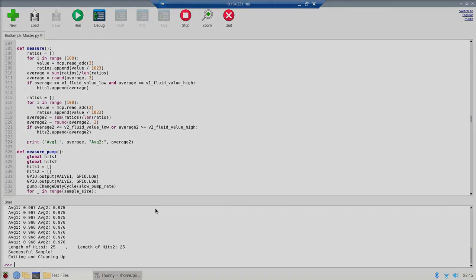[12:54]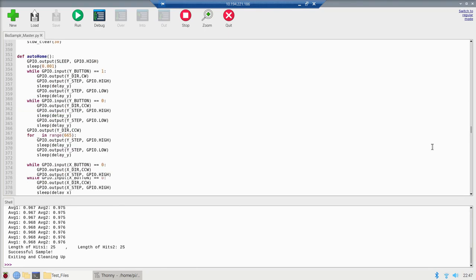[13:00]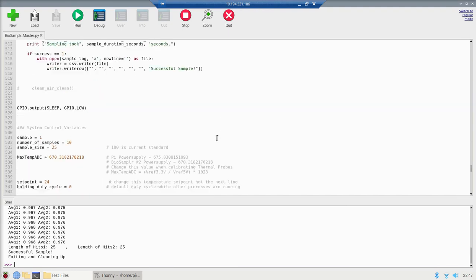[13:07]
So if you need to, this is also a good time to tune your sample size. So if you go back down to the system variables, and if you noticed your sample there took too much, you can decrease your sample size here, or if it was too little for you, you can increase that and try it a couple times, tune it for the exact size that you want.
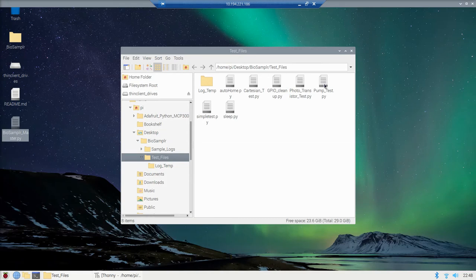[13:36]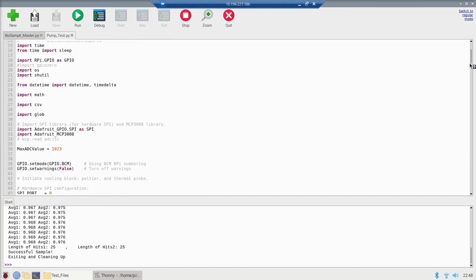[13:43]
This is also a good time to note, pump tubing needs to be broken in, so when you have a new fresh tube with new tubing, you really just want to set that up to run for a couple hours. So in order to do that, you should go to your pump test here and put your source tubing into some water. You really just want it in the waste beaker, whatever you have your waste tubing going to.
And then you want to set up your slow pump one here for a couple hours. So 3600 seconds would be 1 hour, 7200 would be 2 hours. Just run your pump for a couple hours to break in that tubing.
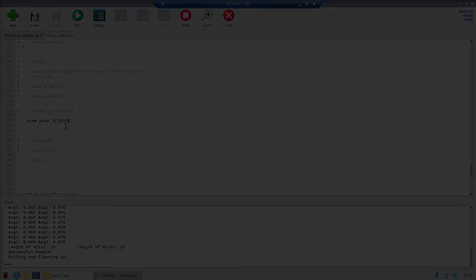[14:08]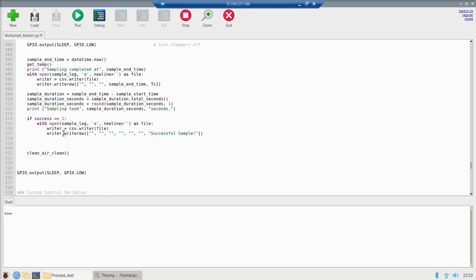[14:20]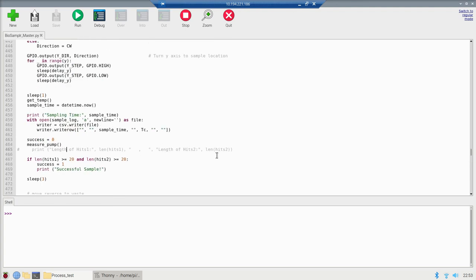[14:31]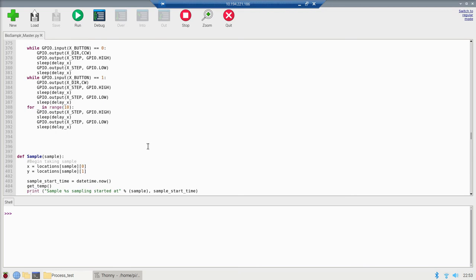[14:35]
So once you have successfully set your bounds for your fluid sensors, don't forget to change your set point back to a desired set point temperature. We use 4 Celsius. Also come up and comment back in clean air clean, so that is running. Don't forget to comment out line 465. It won't detract anything, but I don't need to see the length of those two lists anymore. That was just for calibration purposes.
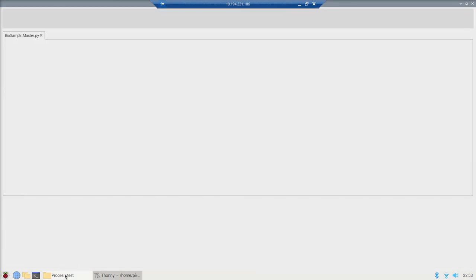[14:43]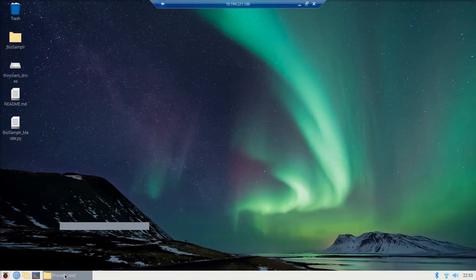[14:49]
Also, same for line 324. I've commented that back out. You can save and exit that. Then I just want to show you, if you go into your sample logs folder here, your sample logs will have been recorded.
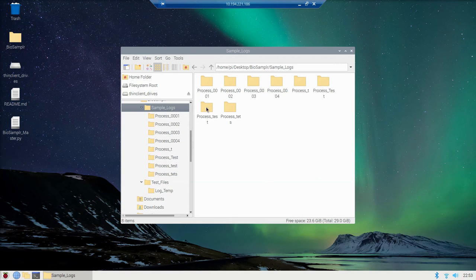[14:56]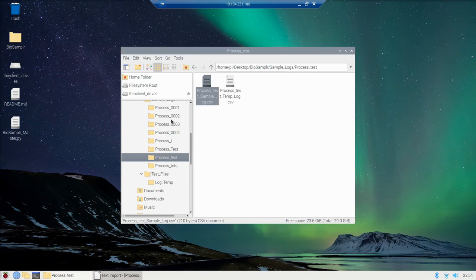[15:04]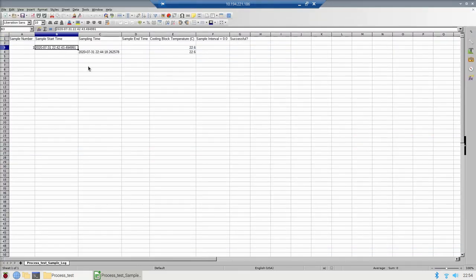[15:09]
And if you go into a sample log, it's going to show you the different times. So sample start time, that's the beginning of your sampling cycle. Sampling time is the actual time that your sample was taken. Sample end time would be the end of the sampling cycle. I exited out before the sample completed. There should be three temperatures here for the temperatures at each of those time points. It will also tell you if it was successful based on the recognition from those two fluid sensors.
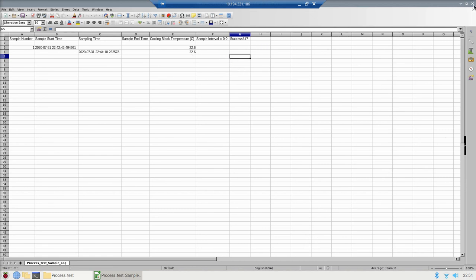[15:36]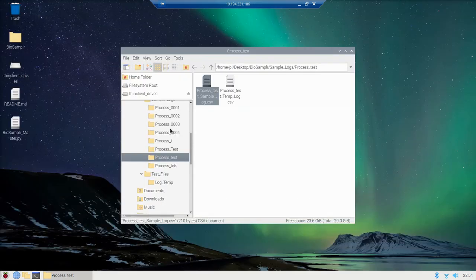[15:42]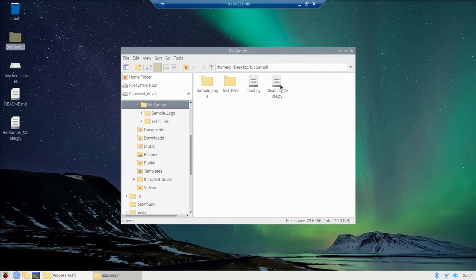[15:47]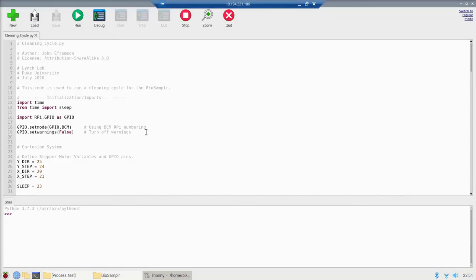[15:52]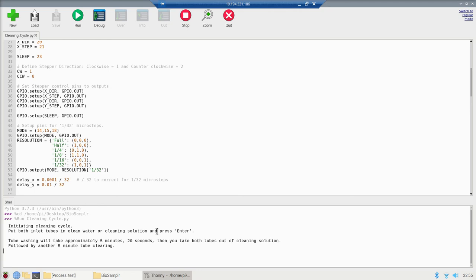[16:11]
Now, one more thing here. If we go back to our main BioSampler folder, the cleaning cycle, you want to run this at the end of a process run, and this one will just give you directions, but when you start it up, it will say initiating cleaning cycle, put both inlet tubes, so that's the cleaning solution tube and the source tube in cleaning solution, and press enter.
Once you press enter, it will start up and it will just pump that cleaning solution through your tubing. Once that is halfway done, it will tell you to take them out of the cleaning solution, and then when you press enter there, it's just going to pump air through the tubing to clear your tubing.